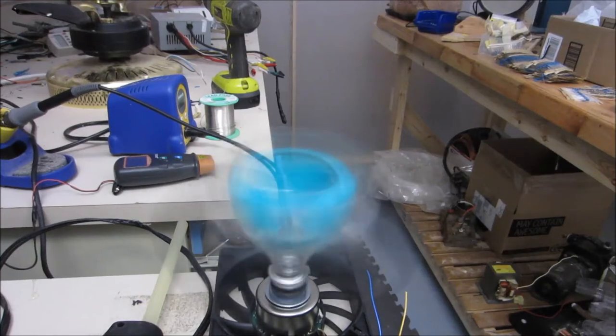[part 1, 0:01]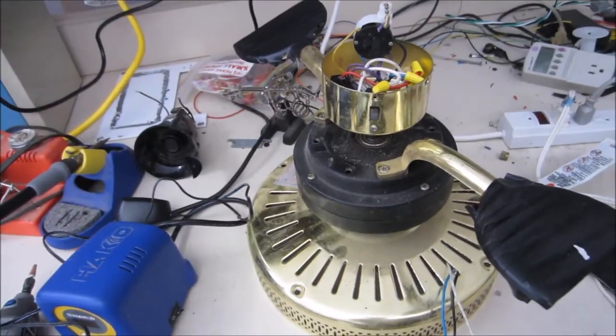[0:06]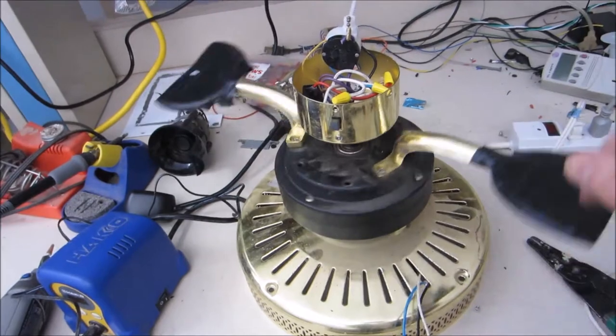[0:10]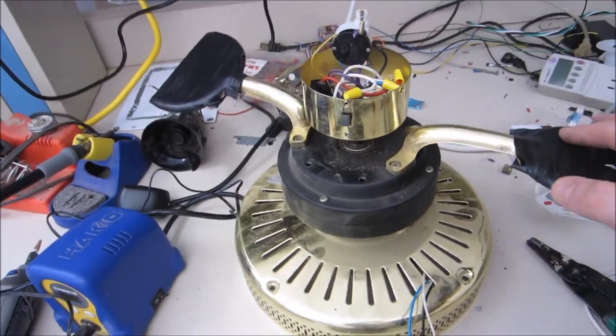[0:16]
I'm trying to make a centrifuge, and I'm looking through my junk piles to figure out what I have. This fan works. I have three ceiling fans, but they're only about 400, 450 RPM, something like that. Then I found this little guy.
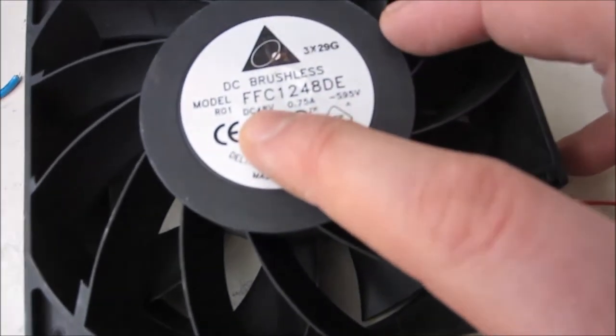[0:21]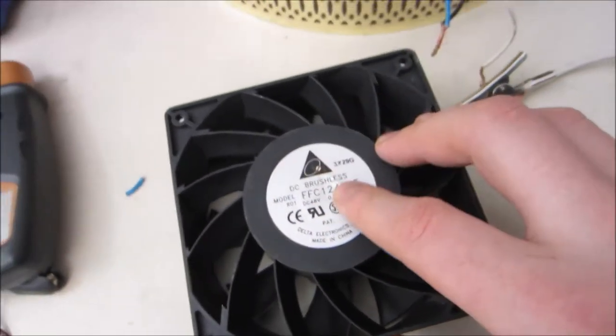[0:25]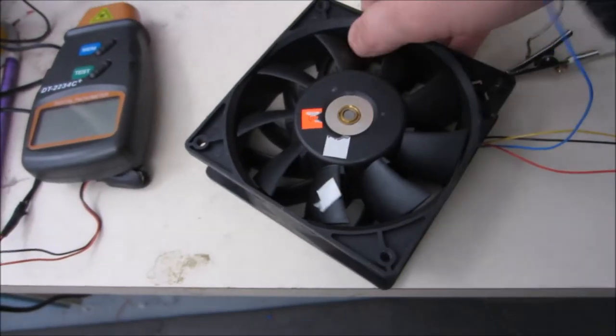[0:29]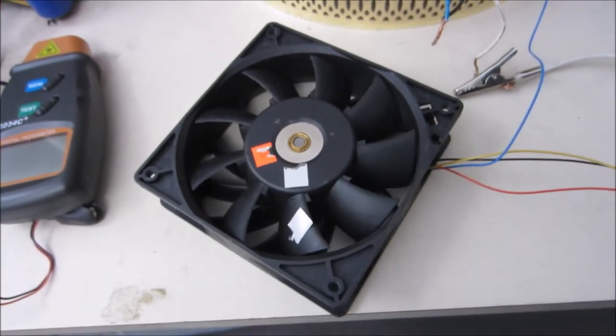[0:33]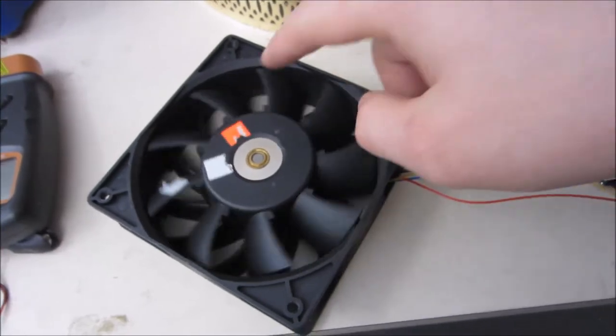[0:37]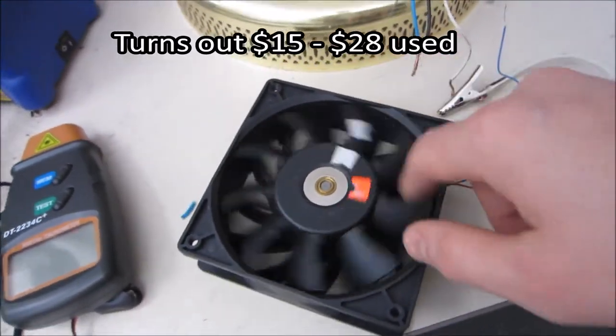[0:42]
Couldn't power it, and then I looked at the spec. It's DC 48 volts at 0.75 amps. That's pretty huge for a computer fan. I got it for $1. And that's not uncommon. A lot of thrift type stores will sell you things that are worth a huge amount of money because they don't know what it is. I haven't looked at what this retails for, but I know it's a heck of a lot more than $1.
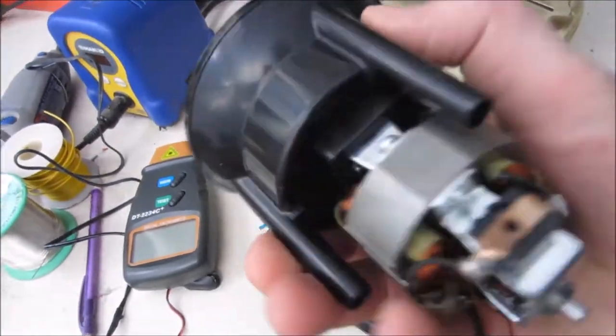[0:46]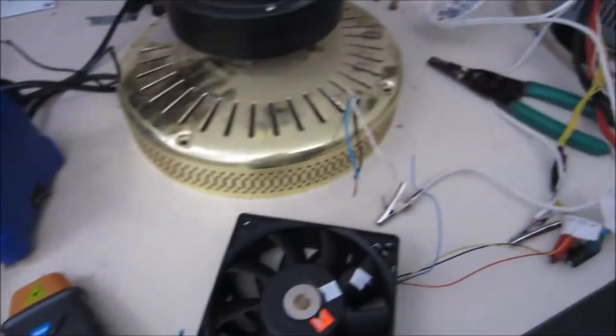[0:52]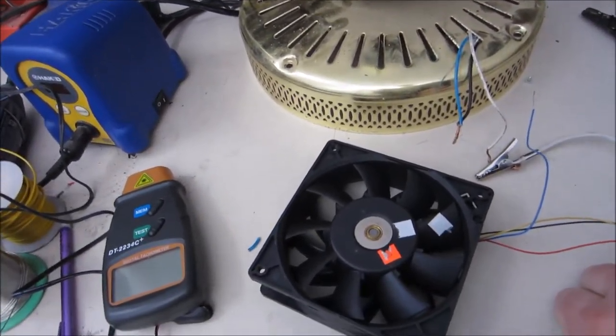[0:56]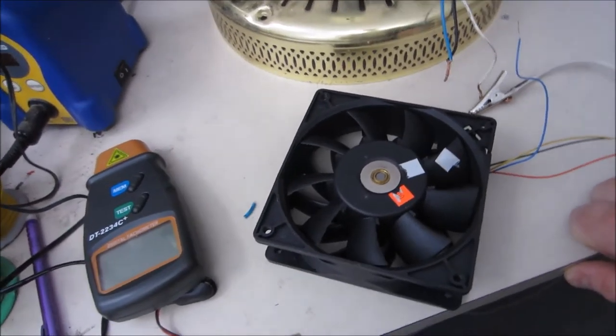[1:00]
Another option I found was this coffee grinder, but the coil seems to be shorted out, which is probably why I have this laying around to begin with. Some other options might be a vacuum cleaner, for example. I know a lot of people would use a drill, which is fine, but I don't have a drill laying around and I'm not going to buy one that will probably burn out from the duration.
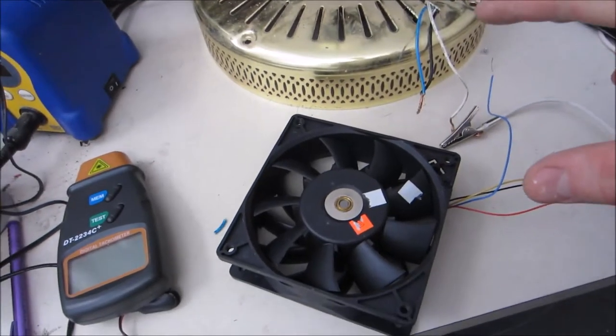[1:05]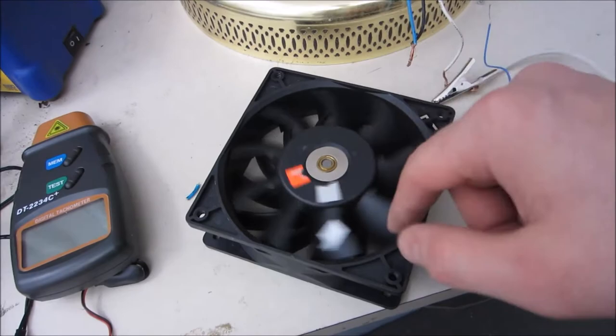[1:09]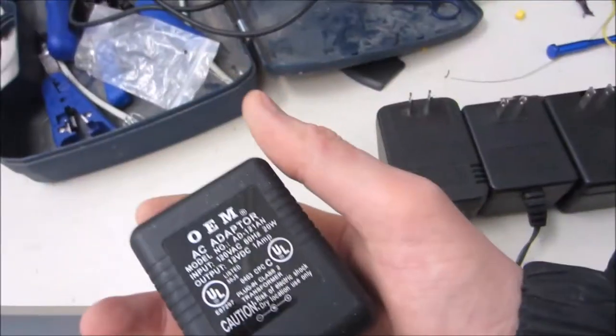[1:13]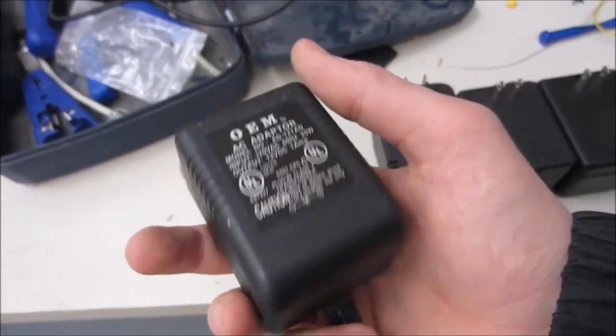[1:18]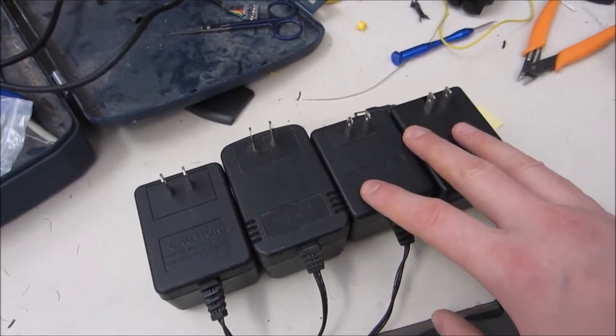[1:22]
Out of all of these options, I would say that this fan is probably one of the best because it's designed to run for a long period of time already. The only problem is getting that 48 volts. And I remembered I have a lot of these old linear supplies for 12 volts DC and they're all about 1 amp. So I grabbed a bunch of these, and the thing about linear supplies is they tend to
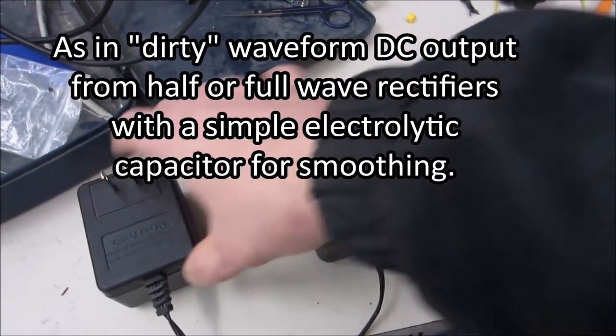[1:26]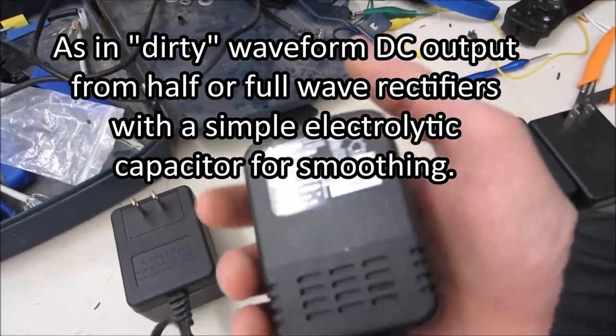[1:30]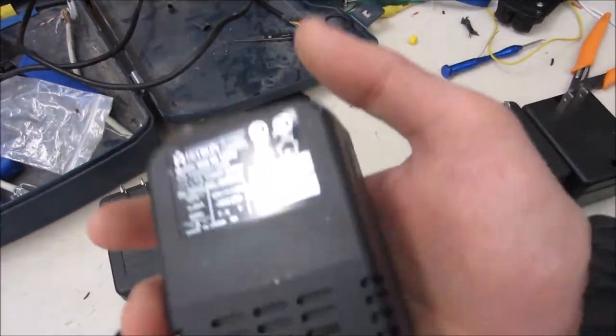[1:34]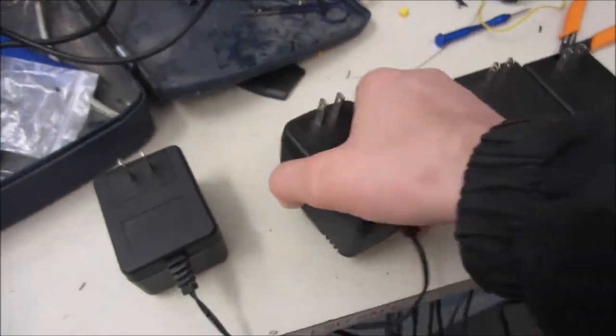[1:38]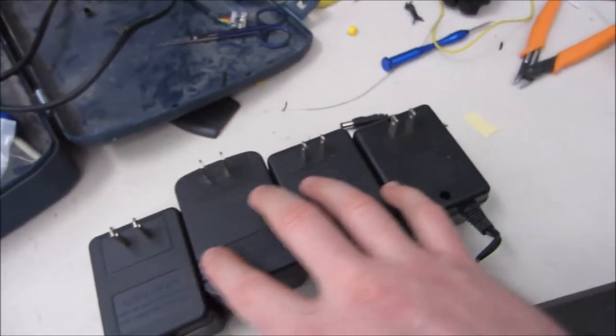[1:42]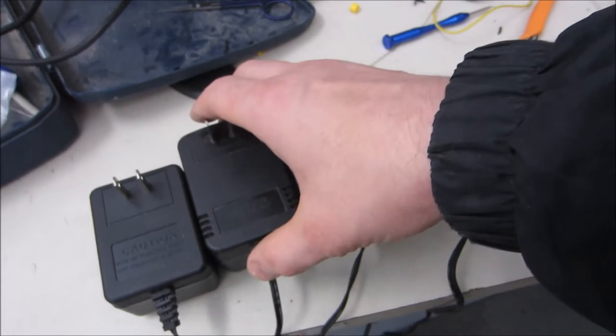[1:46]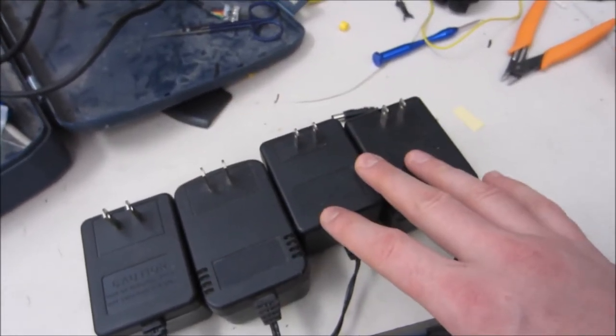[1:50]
be cheap and dirty. And the way you can tell a linear from a switching offhand, if you don't know the difference and you don't want to open it up, basically a linear is going to have a really large transformer. And this feels quite heavy. At 12 volts at 1 amp, this is a big heavy winding. So what I'll be doing is extracting transformers from all of these and probably using the exact same full or half-wave rectifiers they're using. Now, some of these test at around 16 volts.
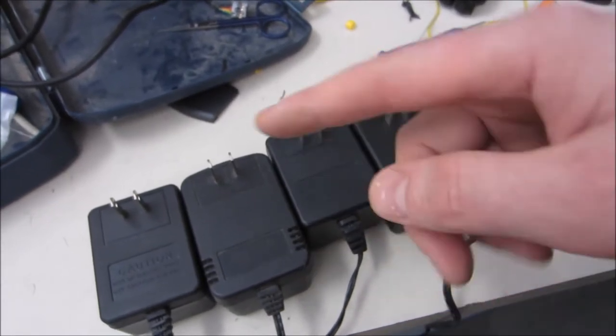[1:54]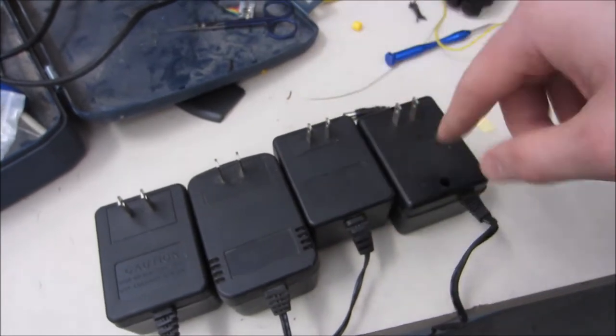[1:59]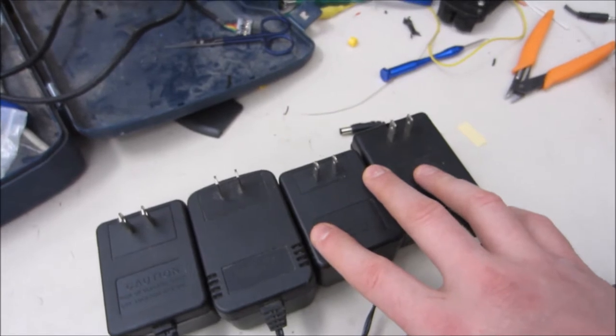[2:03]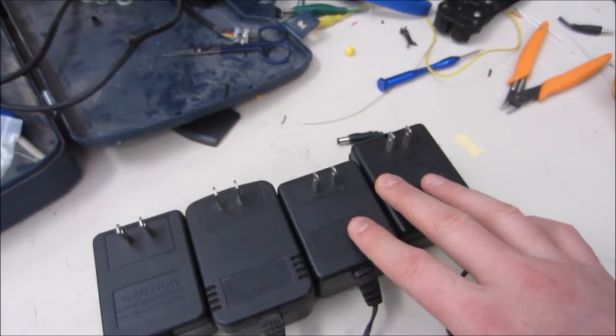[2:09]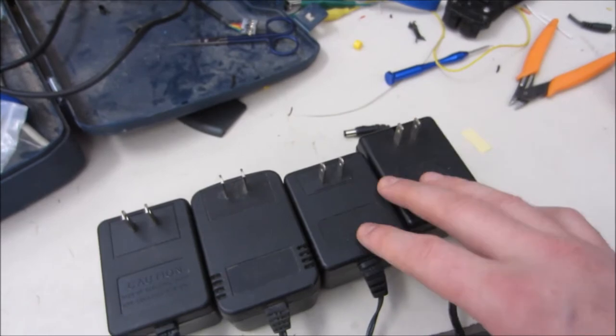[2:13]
And I know that that just means it's a dirty supply, basically. It's peaking at a certain amount and my meter isn't updating frequently enough to see the waveform. So obviously if you have some laptop supplies, those tend to be about 12 to 19 volts. And I could have stacked those together, but I wouldn't have landed quite at the right spot. If I had 12 volt supplies, then I could of course do the same thing.
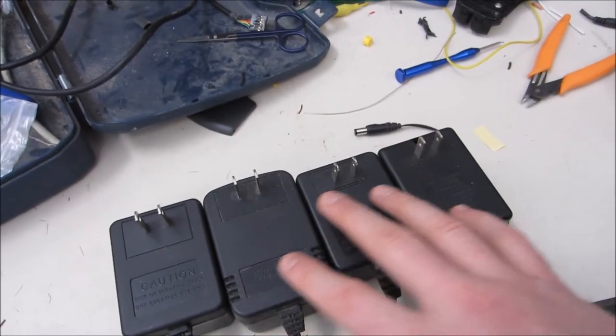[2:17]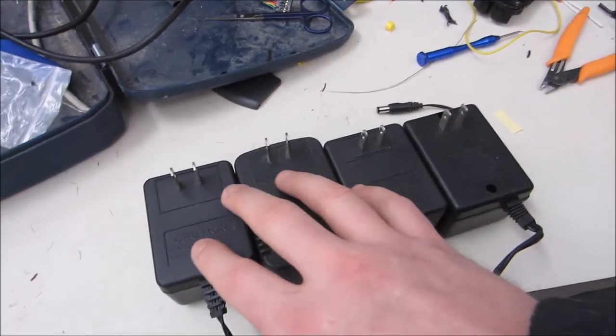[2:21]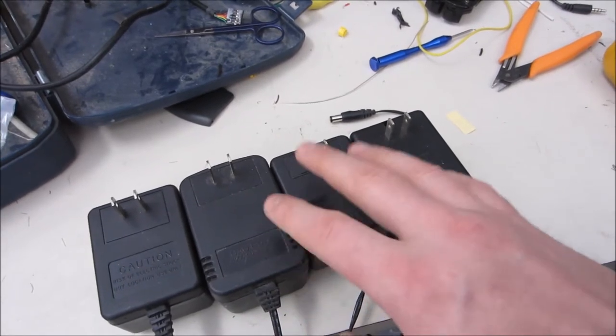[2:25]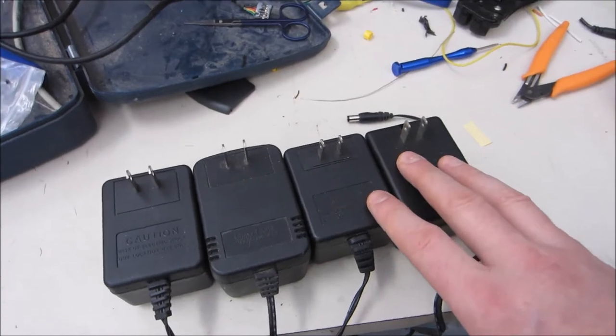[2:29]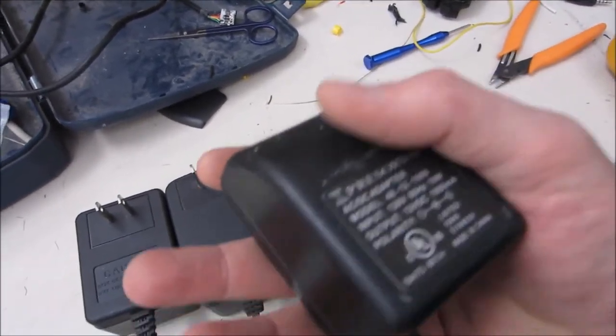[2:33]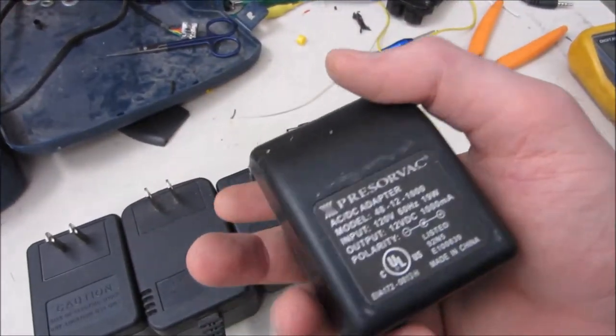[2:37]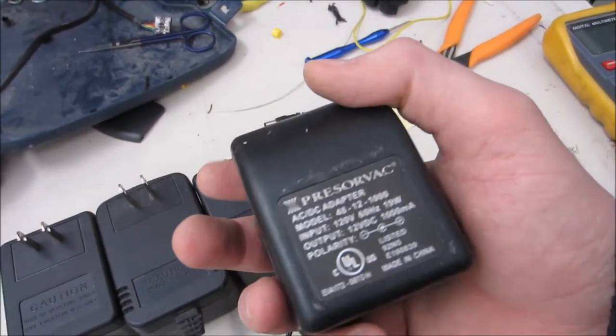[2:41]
There are plenty of 12 volt supplies for other things as well, and those do tend to be switching. And switching is totally fine as well, but there won't be that much wasted power because each of these is 1 amp and it runs on 48 volts at 0.75. I'm only wasting about a quarter of an amp on some of these. In theory, this will be pretty ideal and it will use up these old supplies that I never have a use for because when you plug one of these in, they're on and they are costing you that full amount of power the entire time they're plugged in. These are what people call vampires.
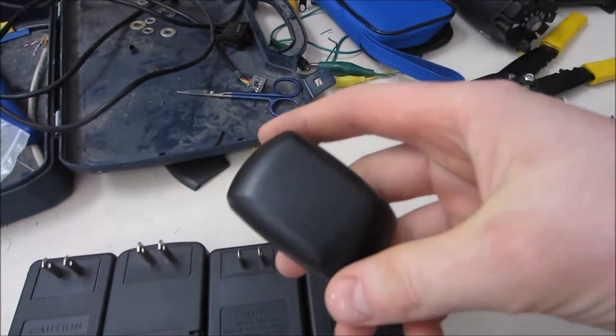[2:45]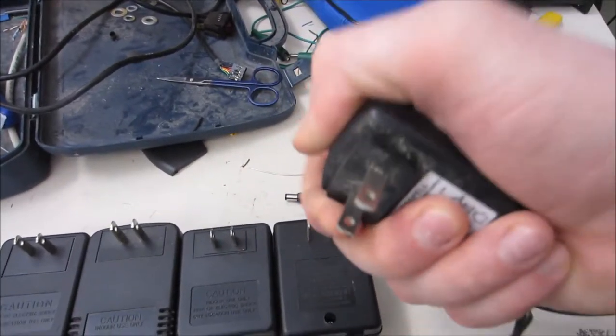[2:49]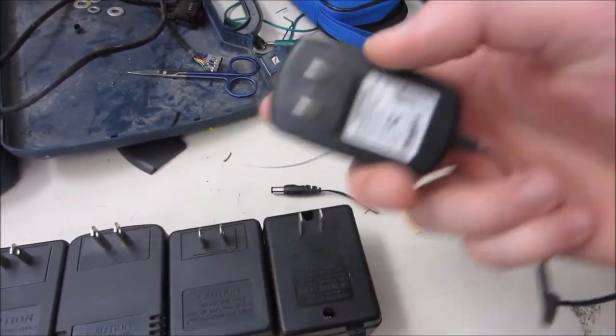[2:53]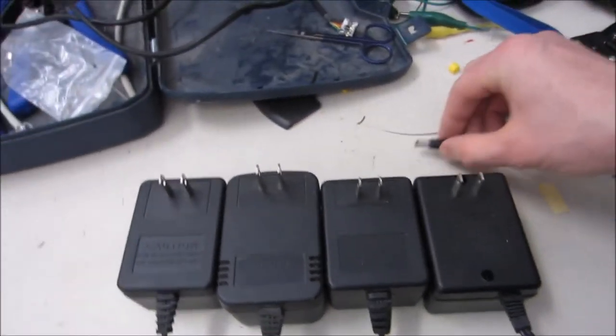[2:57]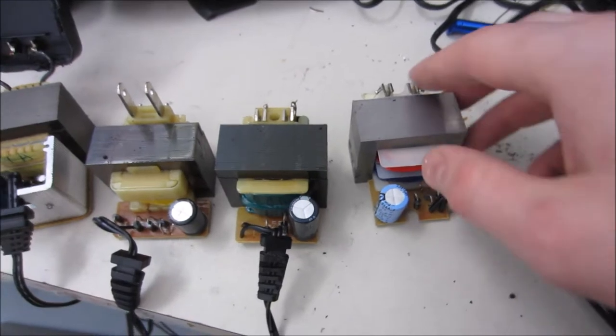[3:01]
This, for example, is a switching supply. And I can tell because it's just so light. And you can also see that it's a much smaller size. Switching supplies are far more efficient, and those will cost you a little bit when they're plugged in, but not nearly as much. It's interesting to see the different designs of these. None of these are identical.
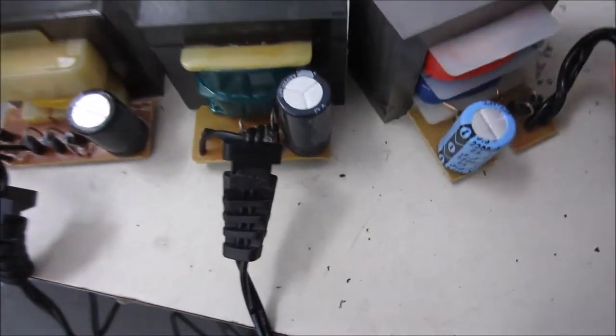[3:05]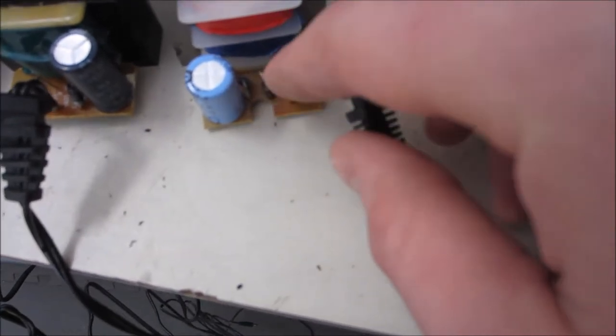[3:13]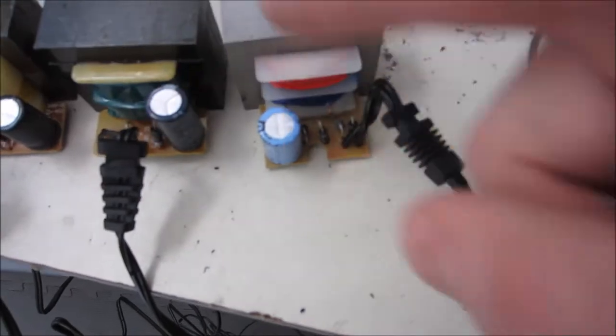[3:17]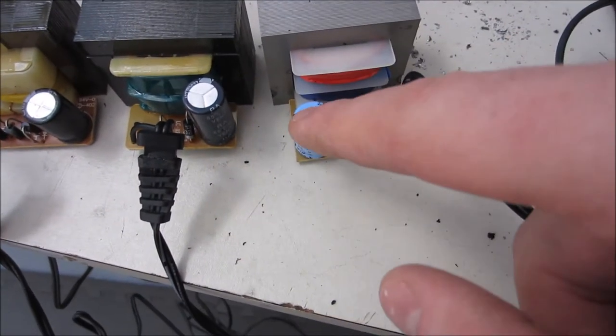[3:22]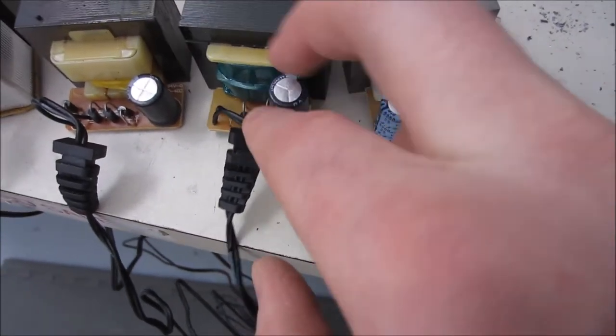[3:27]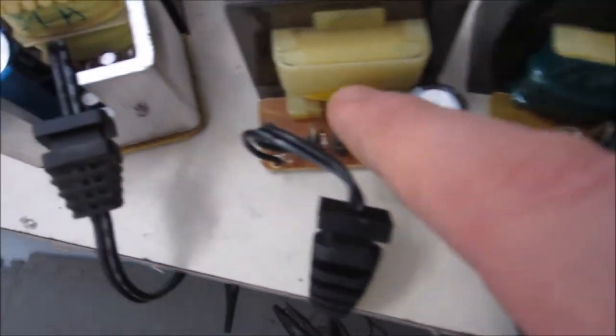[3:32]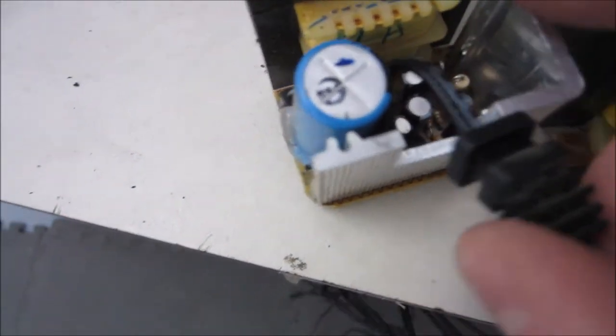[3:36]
They're all very similar. Right here we have four rectifier diodes and an electrolytic capacitor. So what happens is you break up the waveform, and that leaves just peaks as it alternates. With these rectifier diodes, it breaks it down to just peaks, and then this electrolytic capacitor smooths out those peaks. And you can see it's the same fundamental design with all of these. This is full wave, this is full wave, this is half wave. And right here, this one's by far the most sophisticated.
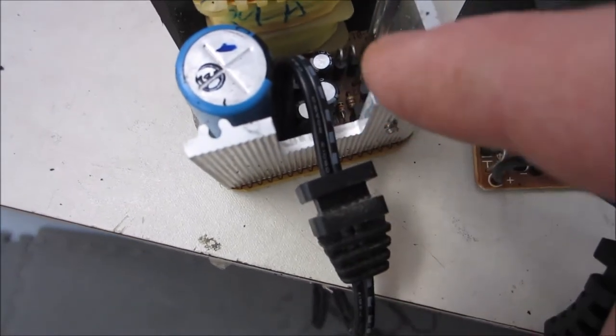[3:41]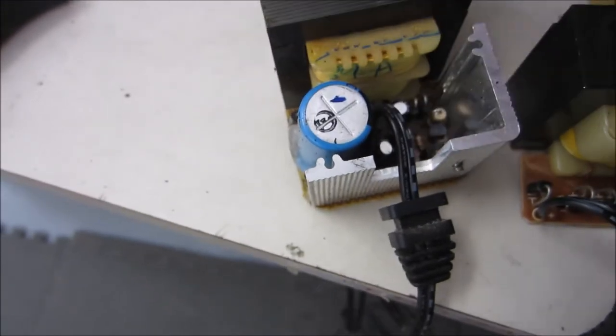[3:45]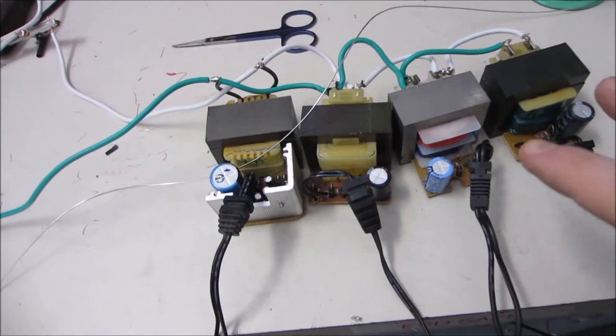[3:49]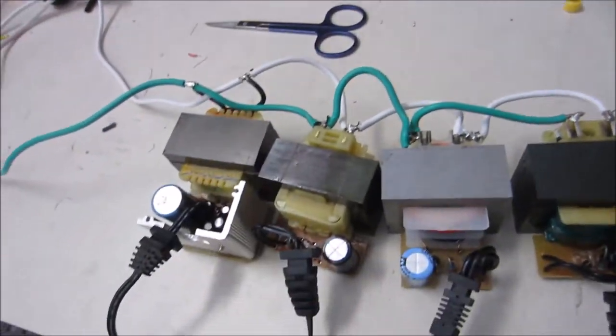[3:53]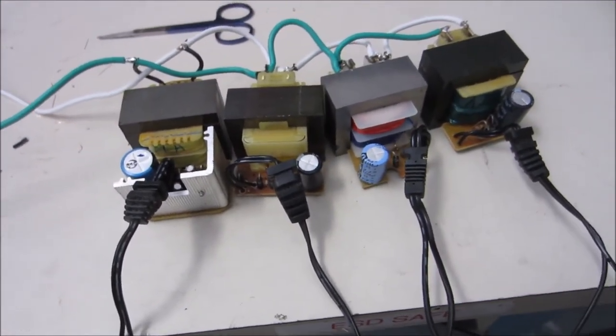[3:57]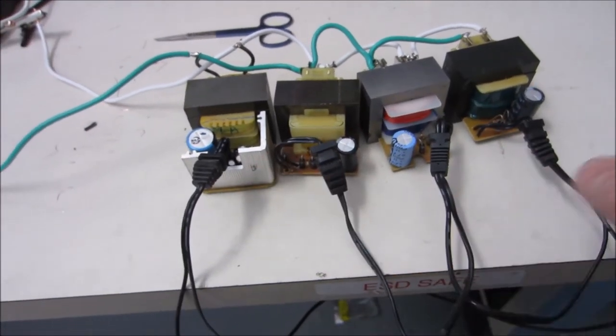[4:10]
It looks like this is actually regulating pretty substantially. And if I recall correctly, this was probably the only one that read a true 12 volts. When this is on, I'm actually getting 60 volts output, but I don't believe that's the effective voltage. And by that, I mean basically it's those peaks. Those peaks are lining up and making it appear like 60, but I think once it starts drawing current, it's actually going to be drawing closer to the equivalent of what it's actually supposed to be outputting, which is 48.
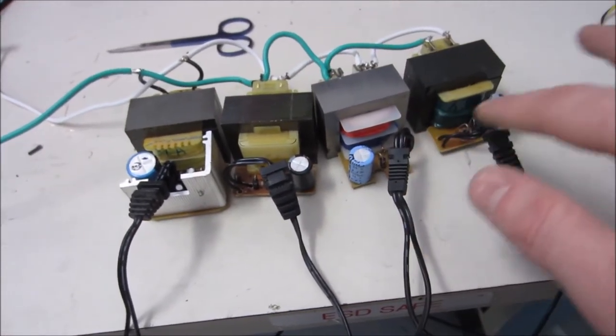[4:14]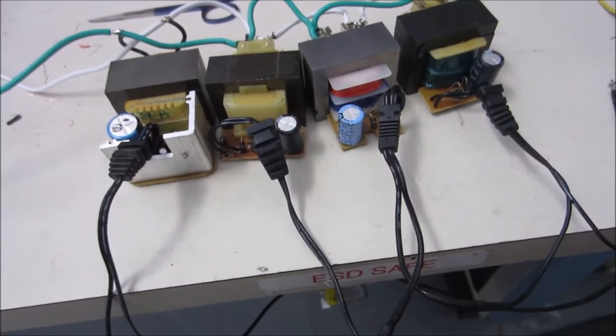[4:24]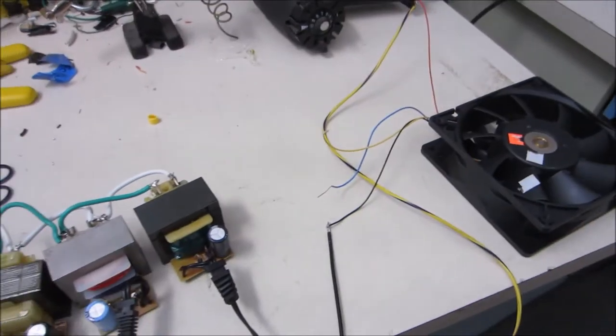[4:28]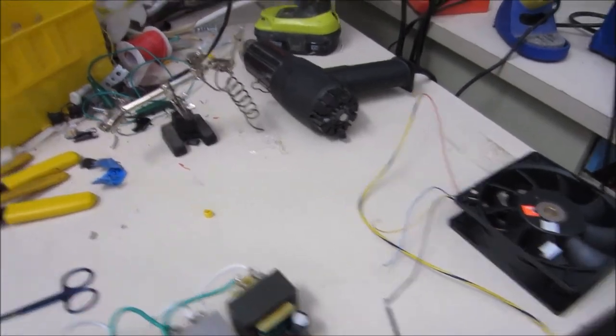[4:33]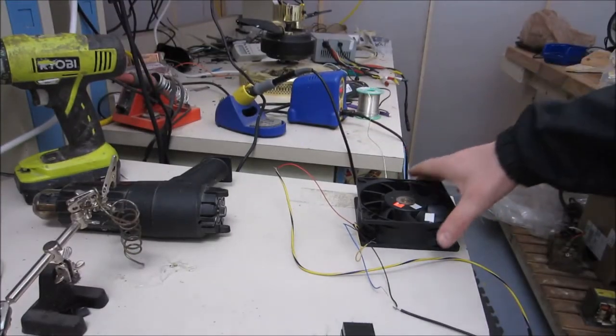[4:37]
Again, this has nothing to do with my configuration. This is just that these are some really cheap rectifier configurations and cheap smoothing electrolytic capacitors. So if I was to go through a secondary set of full wave rectification and a nice heavy duty set of electrolytic capacitors, I could probably get it to actually say it's outputting 48 volts. The main reason I'm taking this video is because I can't believe how much this is outputting in terms of the airflow. It's pretty crazy. It could literally push itself off the table if it wanted to.
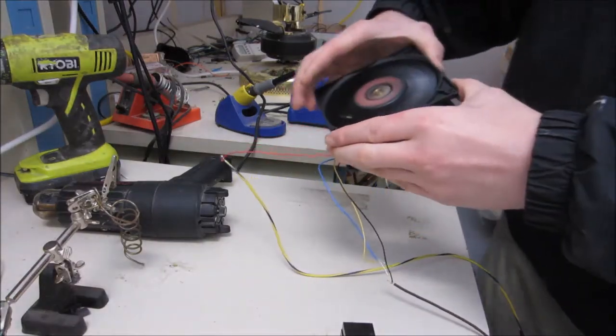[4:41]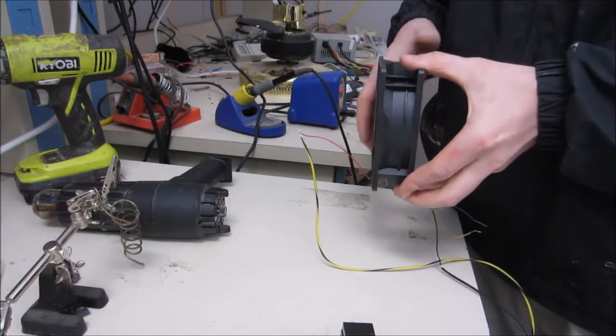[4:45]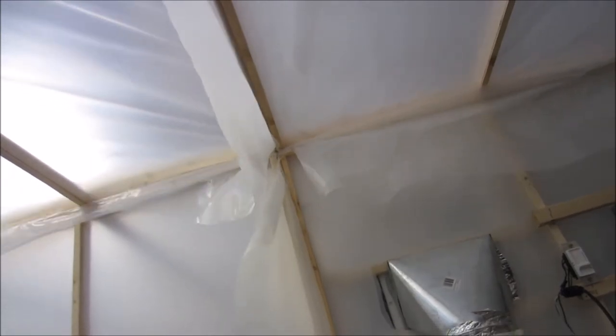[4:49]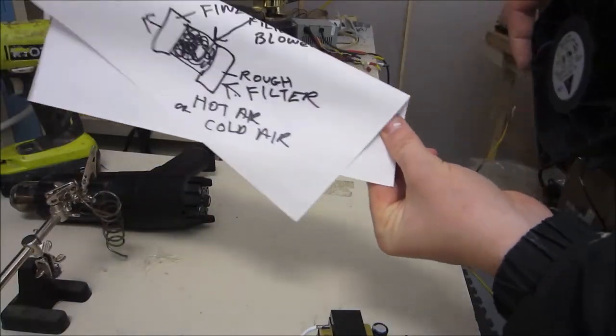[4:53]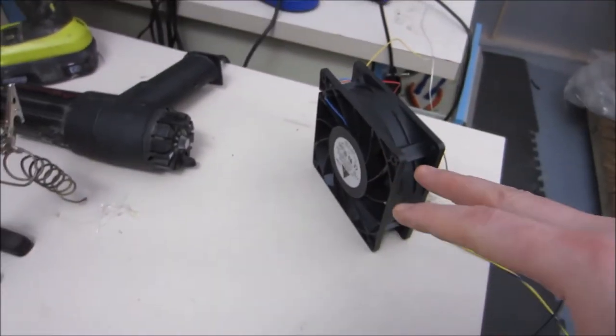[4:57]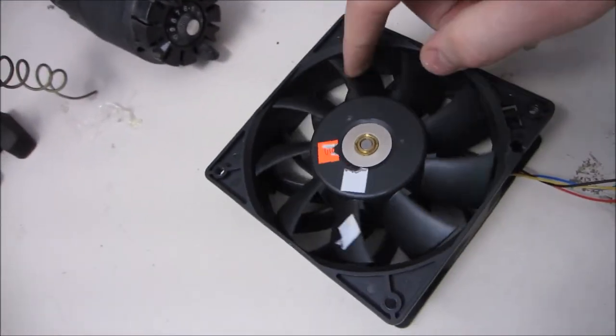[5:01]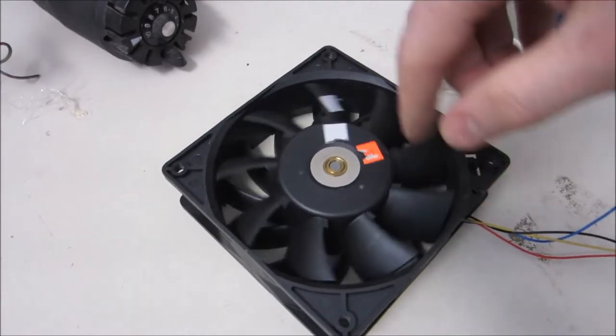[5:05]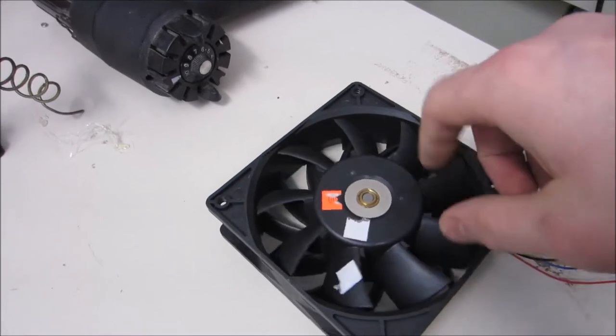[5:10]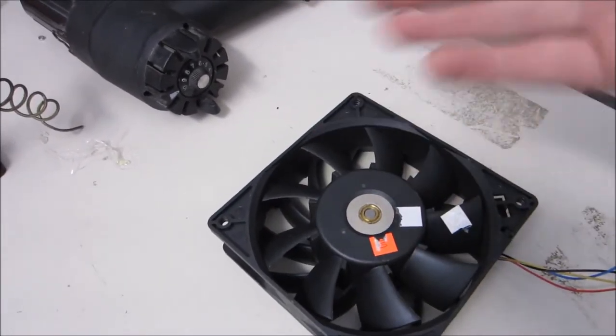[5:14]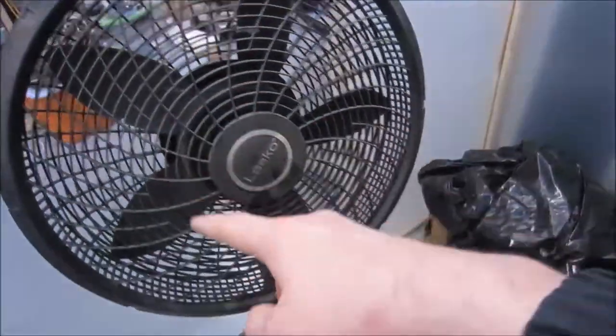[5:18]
So what's especially interesting about this is look at the number of these fins there are. Now, you may have noticed with the paper and the baggie that I was holding up, it just seems to sort of sit in the air. And it's because it's such a high density of these fins that it's not having that pulsing you get from typical fans. Like, for example, look at the number of fins on this fan.
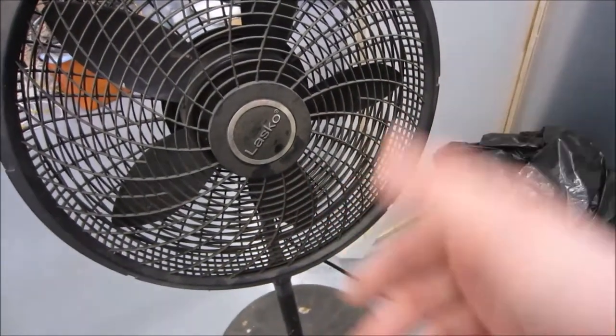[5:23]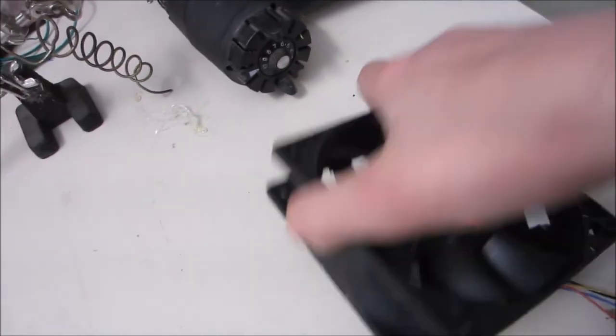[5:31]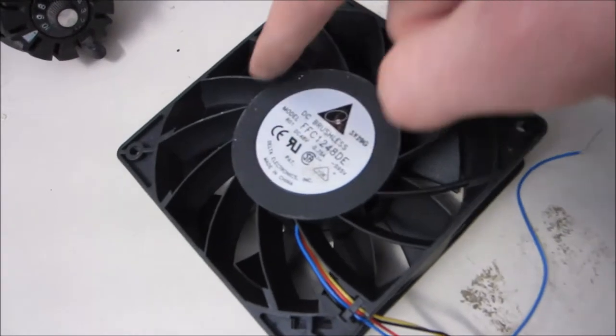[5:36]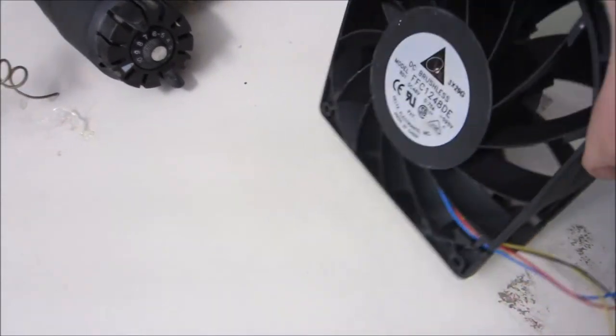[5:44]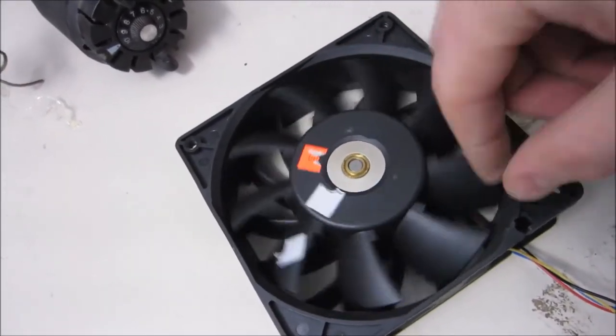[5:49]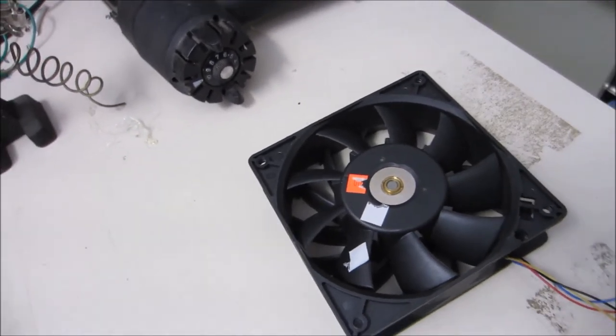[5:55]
This fan, everything kind of flops around because it's getting hit with those bits of air that are being pushed in sort of packets. But this is so much tighter, and I suspect partially also because of these. Yeah, you can see they're actually contrary. So what's happening is the air is actually being straightened out. And although it's still in packets, it's being broken up by the high density of fins and obstacles that are redirecting the airflow. So it's pushing just this static beam of output. It's really interesting. I've never seen anything like it, but I don't generally deal with high-end fans like this.
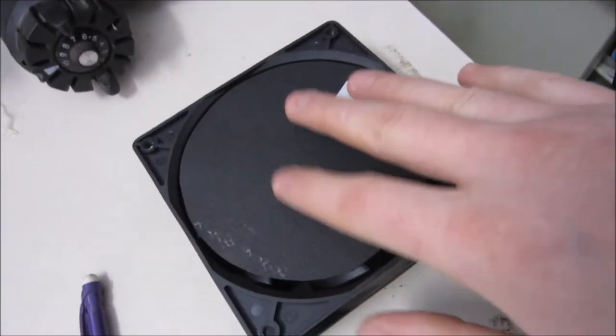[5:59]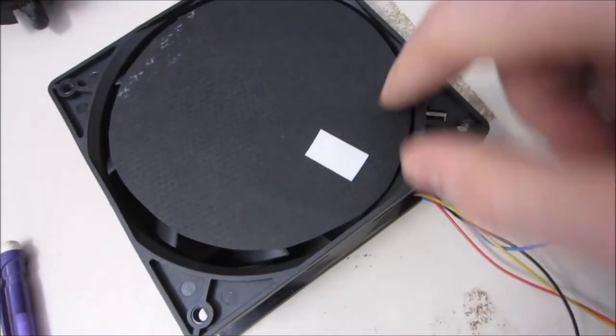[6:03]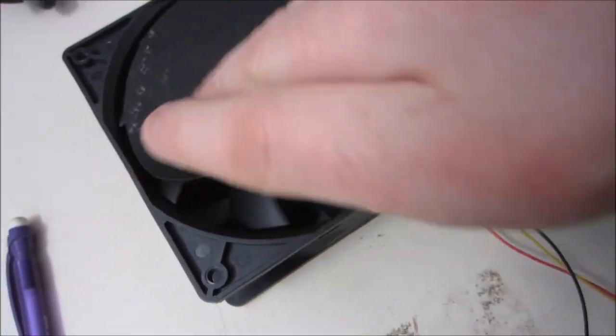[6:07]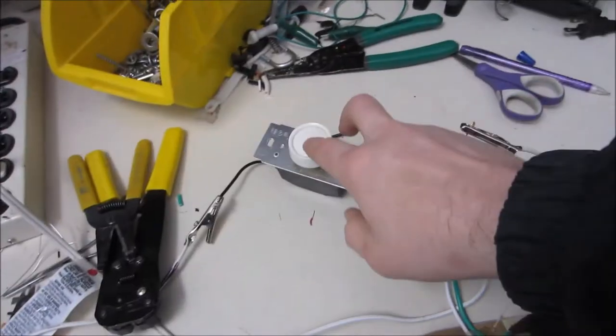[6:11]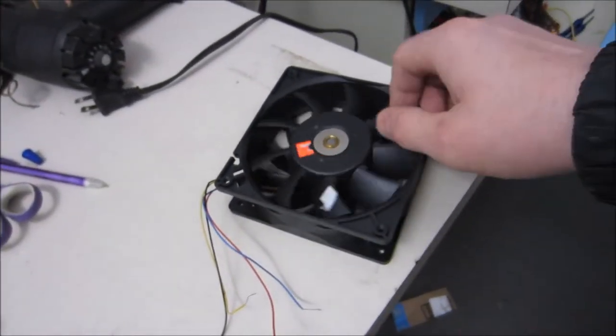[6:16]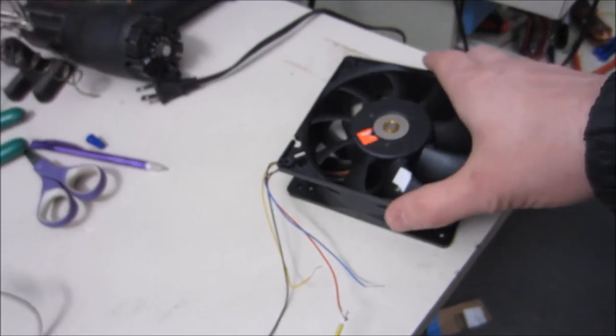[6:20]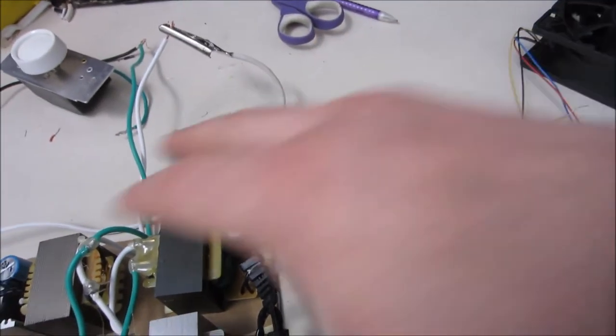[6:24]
Well, I was able to put a piece of black construction paper on here and a reflector, and that measures at about 5,000 RPM. And that's with the resistance of these blades. Impressively, a dimmer switch actually works with this. I wasn't sure because this is brushless, but it's also DC. So I suppose it makes sense in that regard. So what must be happening is it is actually effectively lowering the overall voltage output.
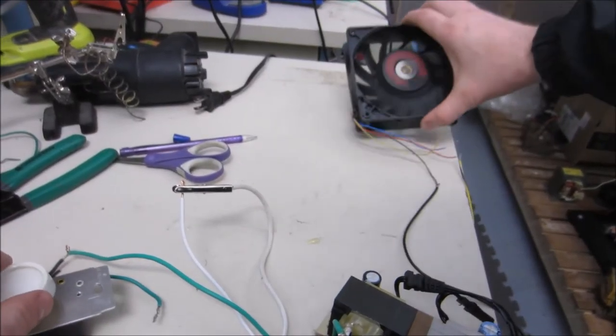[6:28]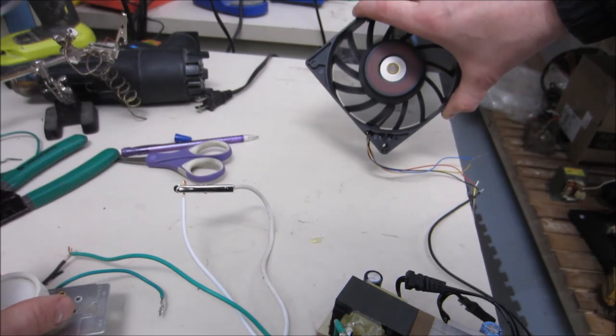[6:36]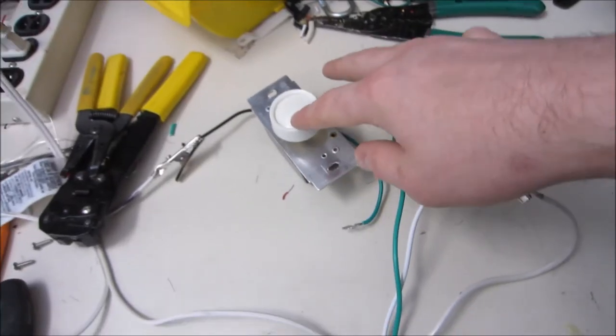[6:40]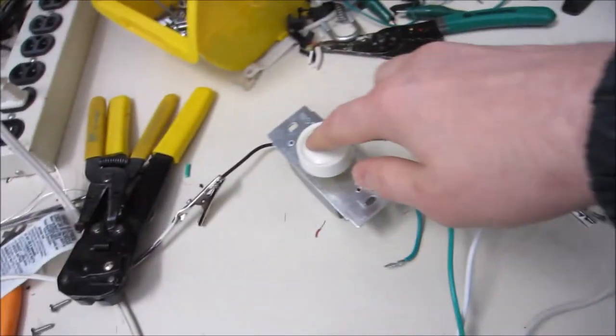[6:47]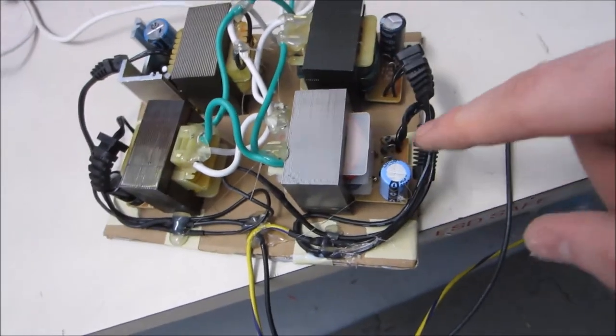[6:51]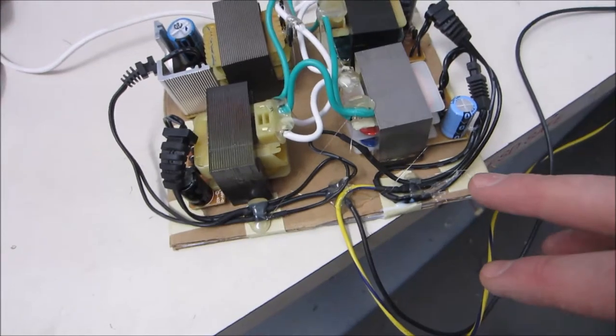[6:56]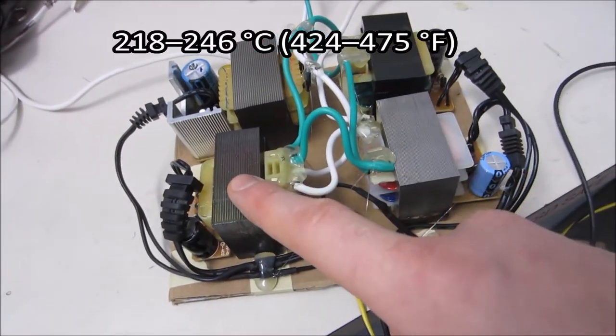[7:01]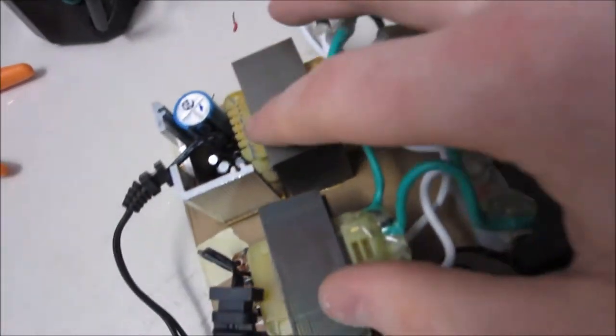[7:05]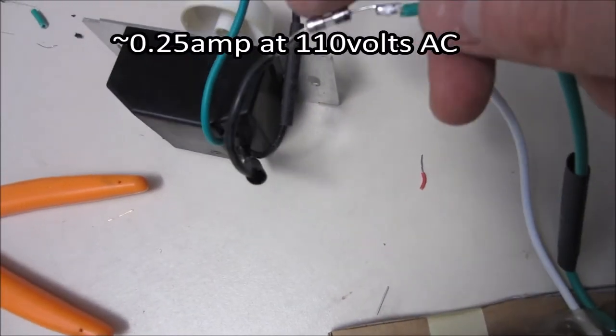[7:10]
These are normally fairly expensive, but this was 50 cents. Again, you know, from a thrift shop. This really nice fan was $1, this was 50 cents. These were free because they're just crap I had laying around. I mounted this on cardboard because the auto ignition temperature of something like paper or cardboard is actually fairly high. I would bet that the resin would break down and short these coils before it would auto ignite the cardboard. Each of these linear supplies will draw about 1/4 amp. So together they should draw 2, and so I put a 3-amp fuse on here for safety.
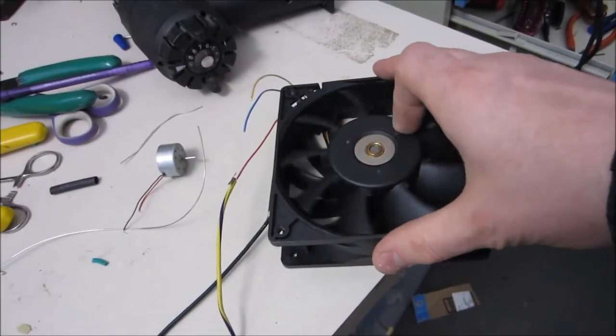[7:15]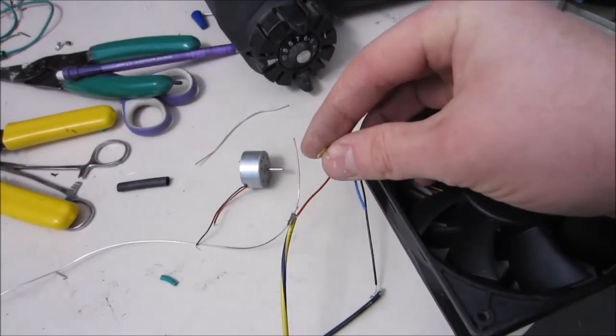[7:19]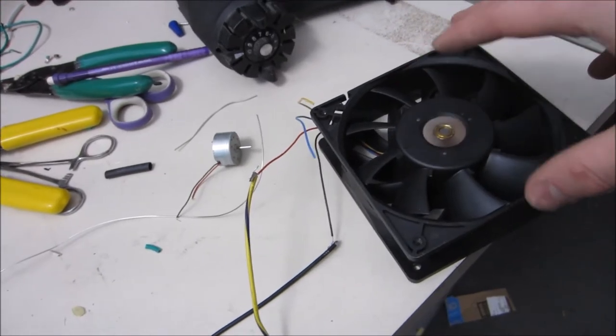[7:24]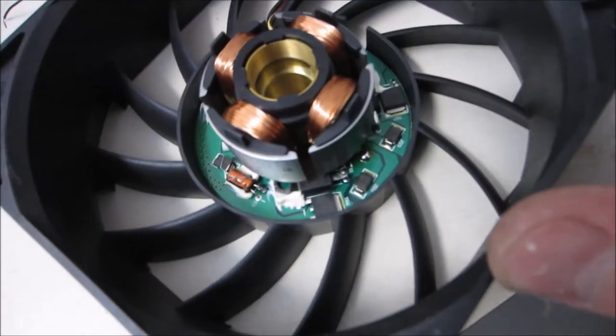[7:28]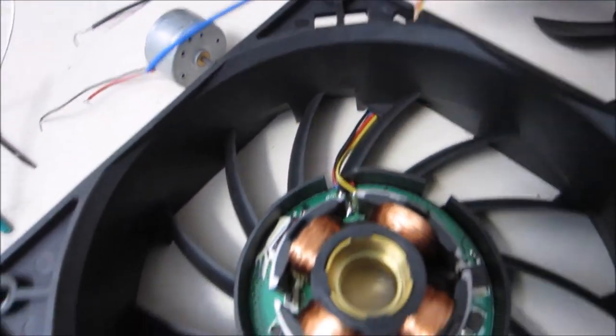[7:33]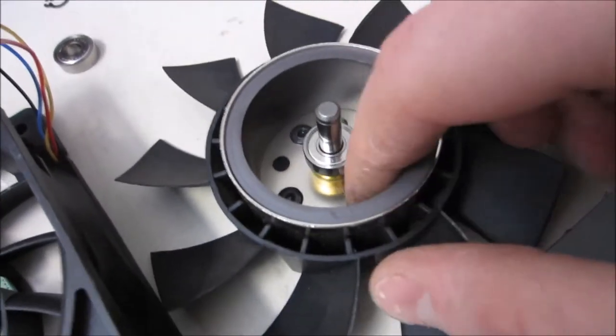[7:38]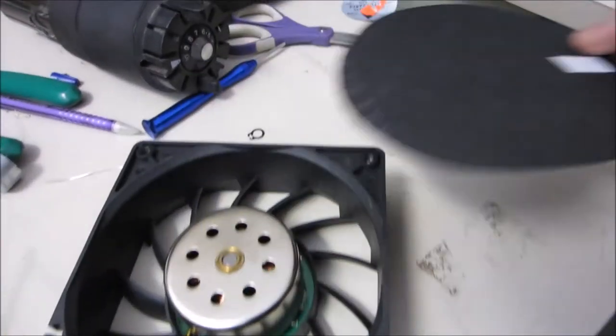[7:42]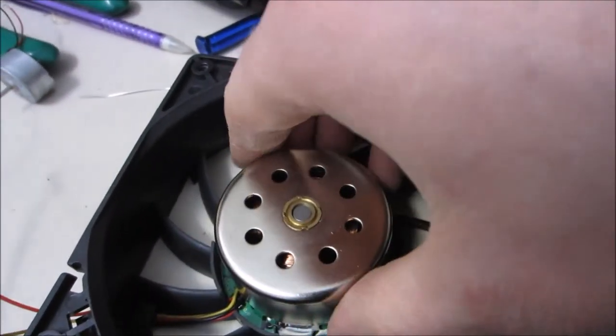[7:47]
Well, annoyingly, I seem to have fried my other one of these. I also did something stupid. I also tied it into one of these sensor wires, and I don't know, I may have fried some kind of brain in here. Yeah, clearly there are some pretty sophisticated electronics in here, so I guess I shouldn't be too surprised that I managed to burn out the last one by hooking it to a sensor wire. I think I can get these propellers off. I'll just have to remove these rivets with a drill. So I just did a quick RPM test, and it's just under 7,300 RPM now that the blades are off.
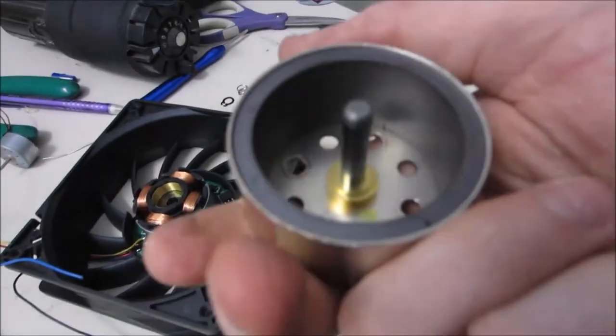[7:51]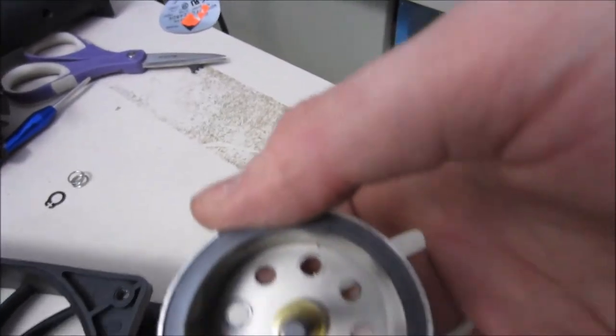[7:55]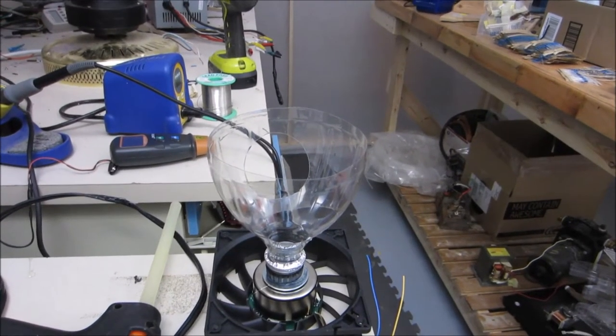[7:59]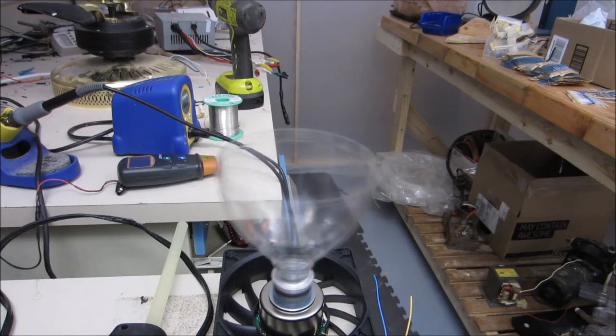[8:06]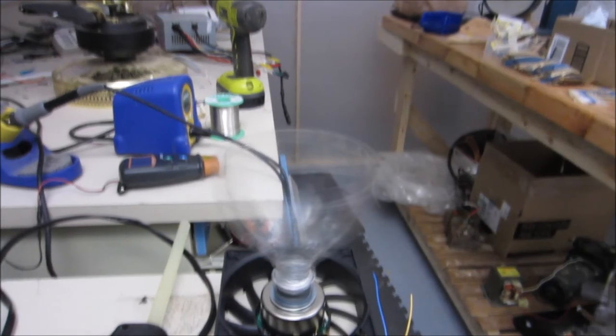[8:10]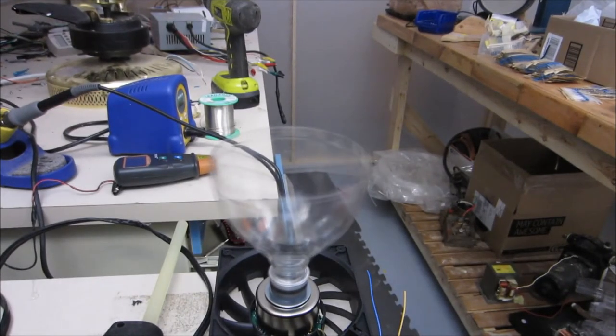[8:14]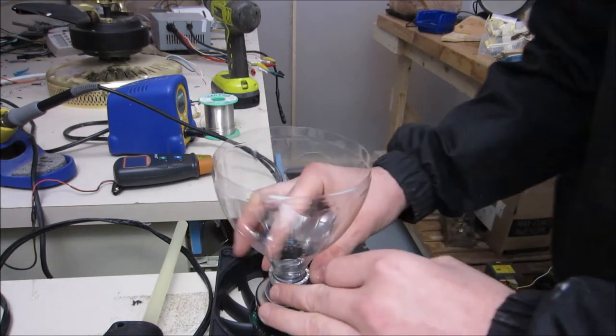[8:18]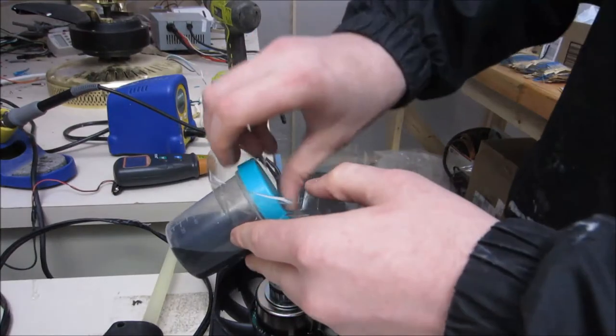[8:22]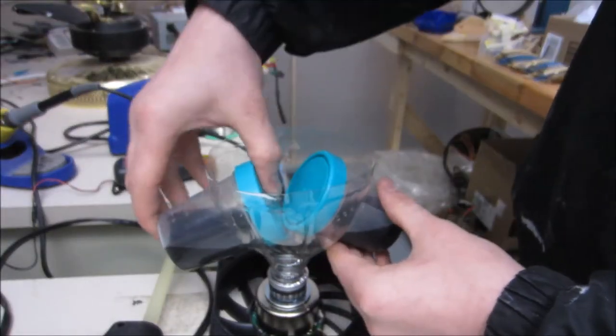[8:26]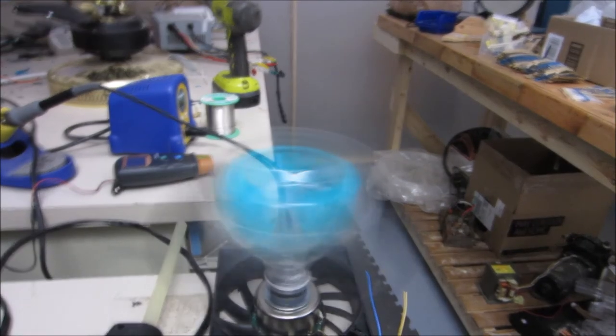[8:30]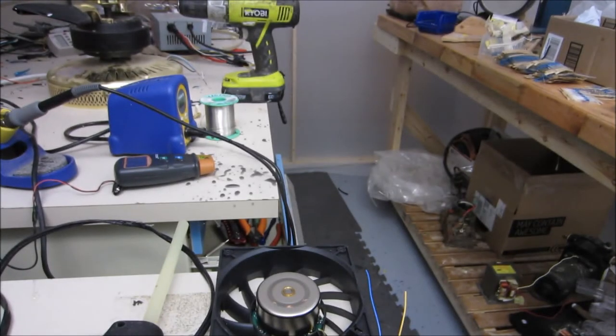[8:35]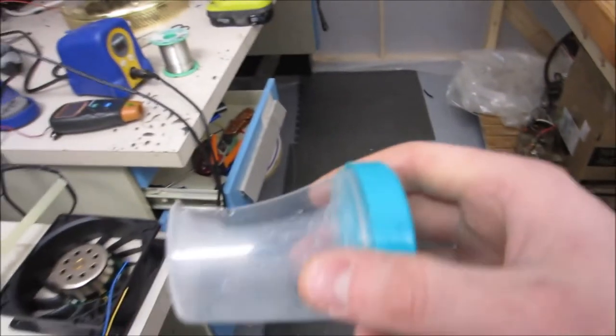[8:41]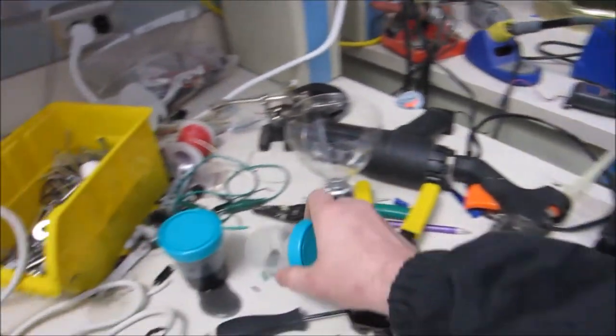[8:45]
This is what this piece looks like. So this looks like it should be pretty easy to mount in theory, because I can just put some screws through it. So you don't have to tell me this is idiotic, but I just wanted to see, as a proof of concept, if this would even work at all. So this is empty. A little bit of misalignment goes a long way with this sort of thing. Let's add a little bit of load. Yeah, that just kind of flew off and exploded.
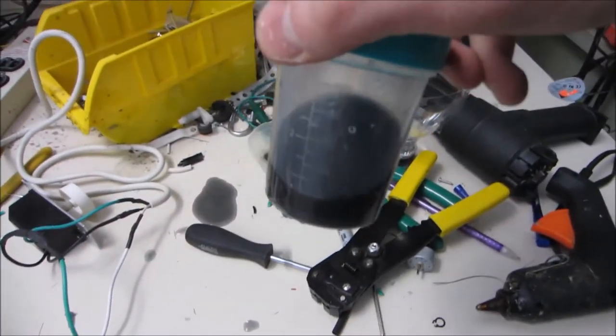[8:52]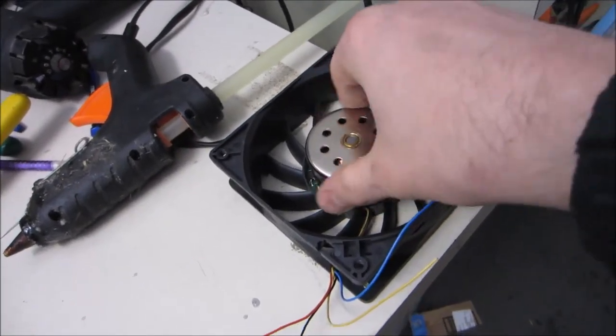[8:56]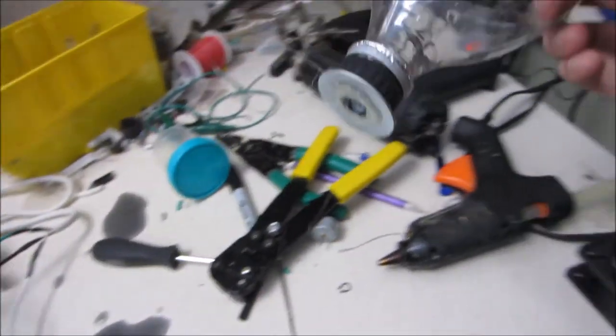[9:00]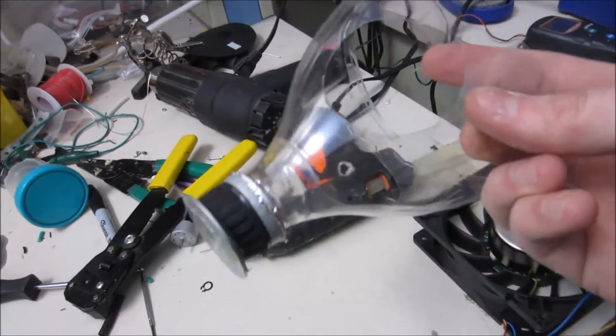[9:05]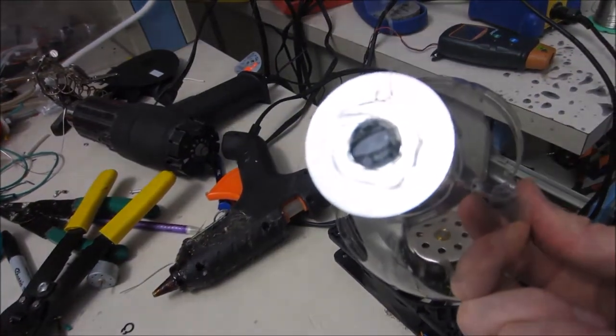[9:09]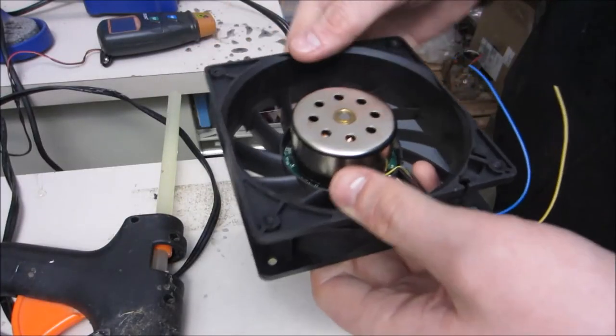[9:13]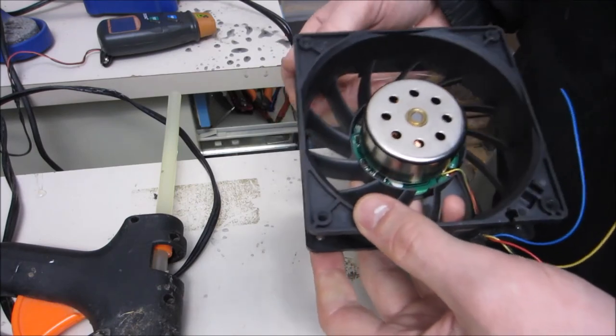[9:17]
Okay, well, on the bright side, nothing really important was damaged. Just lost a couple sample cups and this thing actually even broke. That hot glue let go pretty dramatically quickly. I don't especially want to remove this housing. I don't want to destroy this housing, but at the same time, it's going to limit my options.
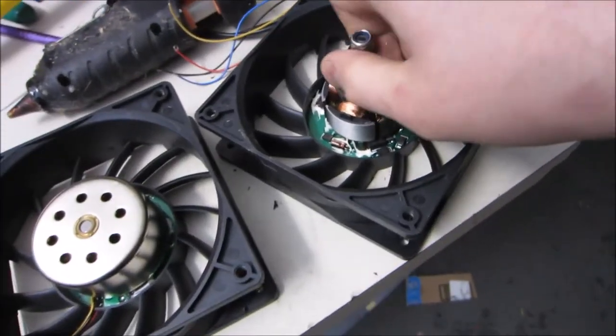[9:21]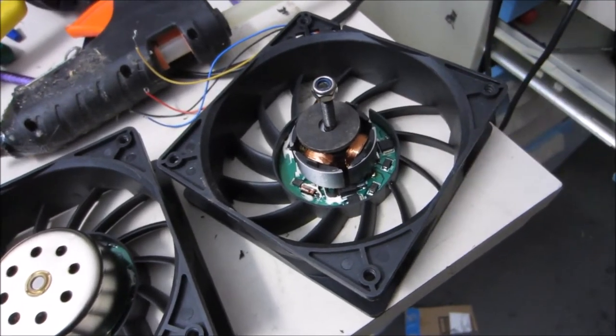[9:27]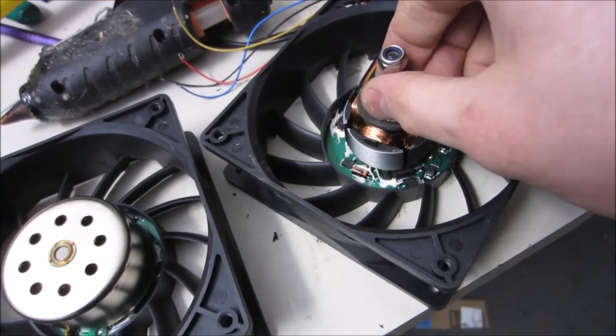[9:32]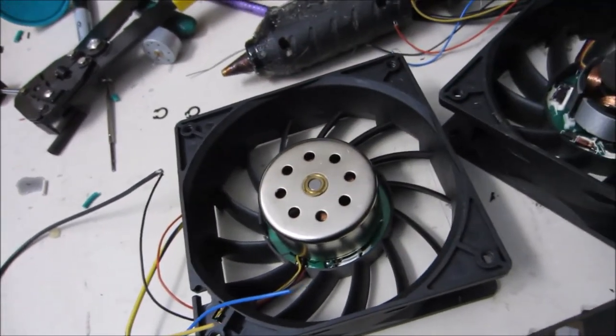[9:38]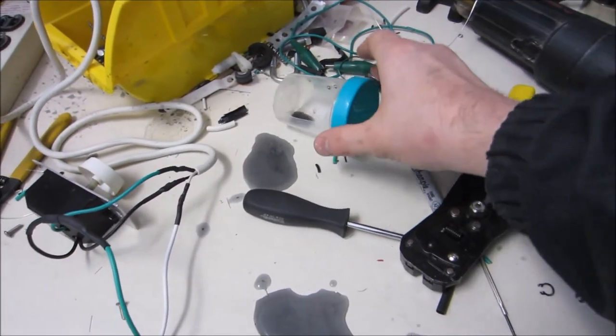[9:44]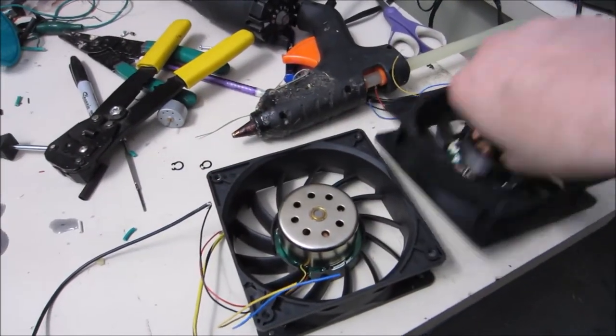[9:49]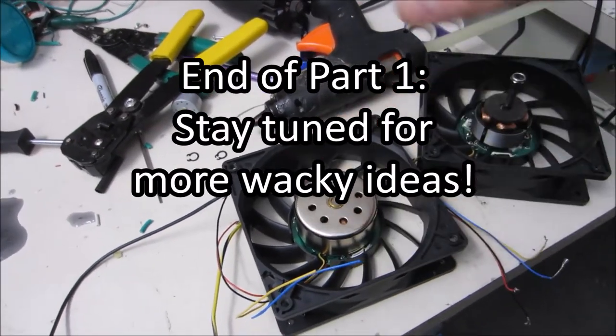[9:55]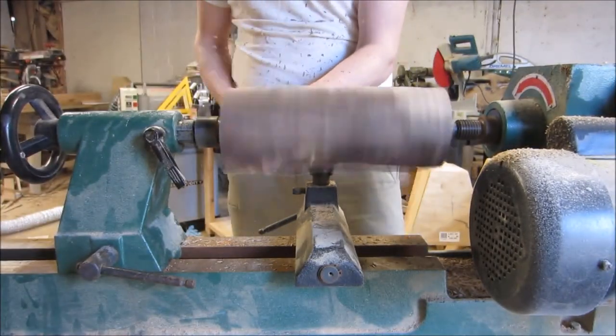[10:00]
I haven't completely figured it out, but I figured since I already destroyed this particular one in terms of the electronics, yes, it may be salvageable, but it already has a nice bearing assembly and housing, so I can probably use it as an opposing axle to help focus any kind of movement that may happen. I also am a little bit on the fence about these sample cups. I just happen to have a lot of these. These are actually urine sample cups. So I'm thinking I have a bowl right here, and then I have an opposing housing above, which just helps hold it down, and then I can just load anything into it.
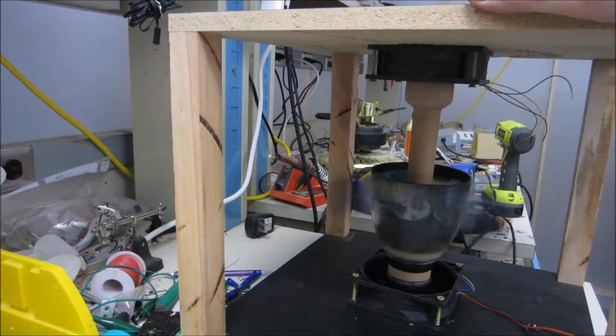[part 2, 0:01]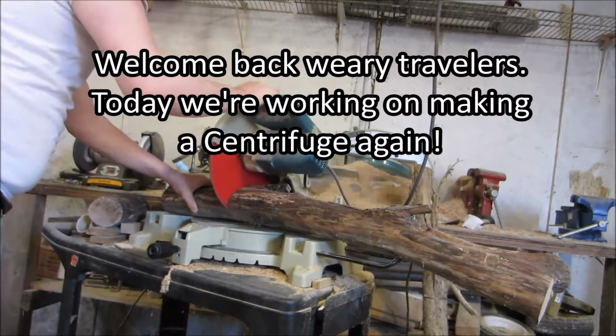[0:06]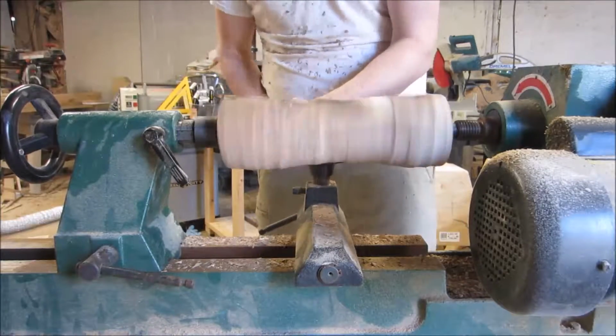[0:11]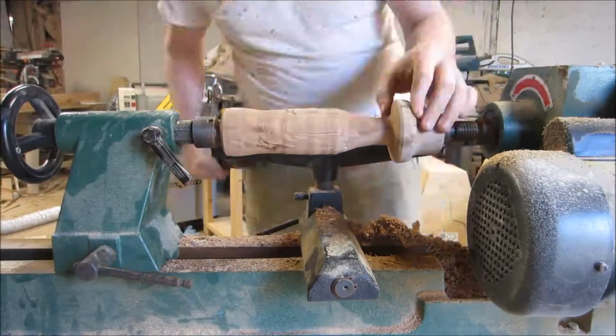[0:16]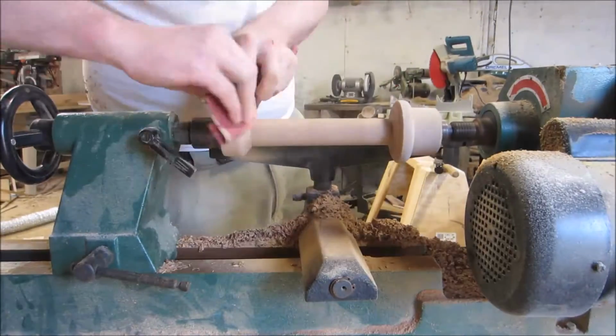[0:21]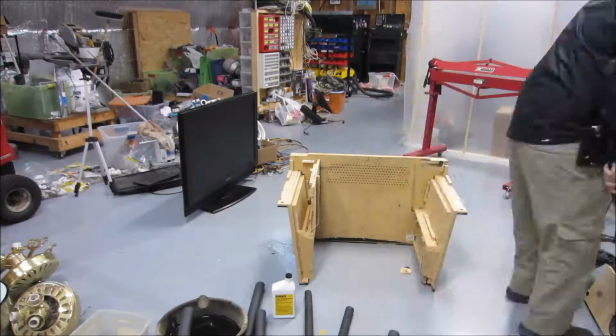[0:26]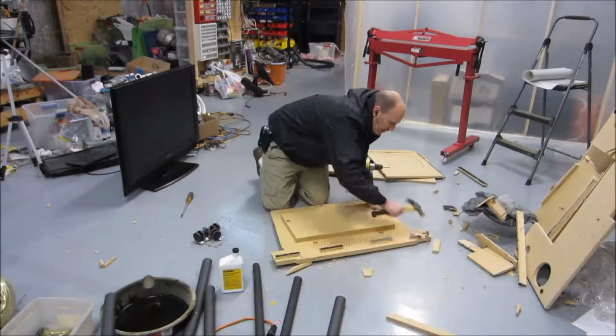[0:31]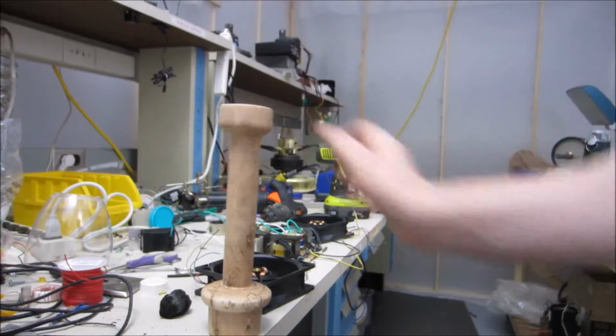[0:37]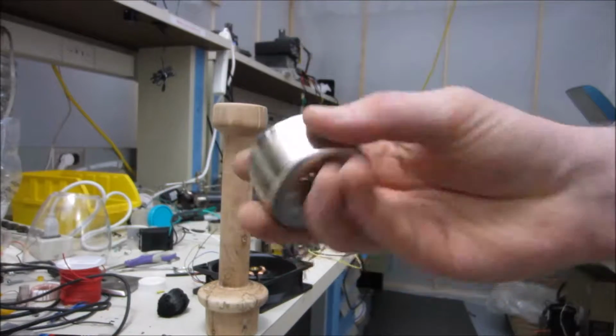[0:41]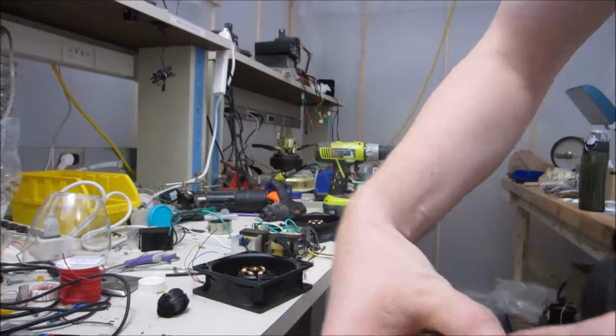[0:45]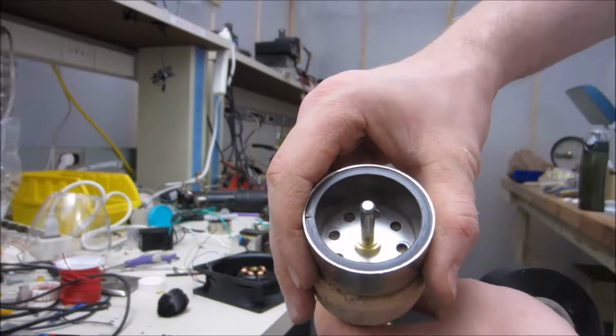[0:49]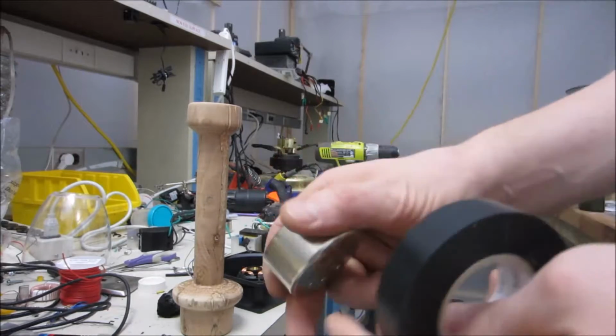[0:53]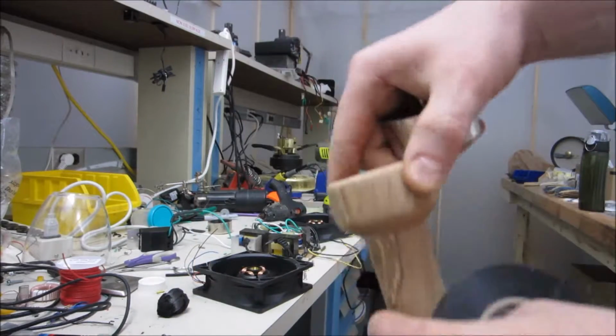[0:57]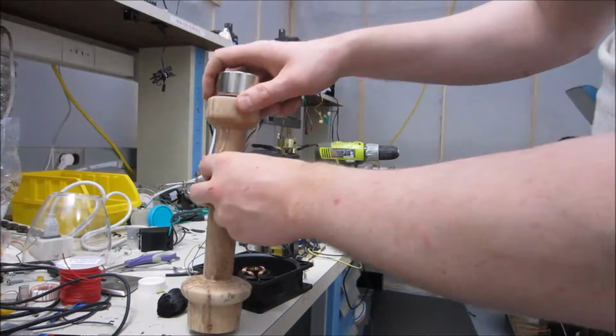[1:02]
Shit. This has to be really, really centered, and I don't have the tools to do that by a long shot. I could try to eyeball this, but I doubt that's going to be adequate. So, I was thinking my best bet is to wrap it with electrical tape until I have the same diameter as this, and then I'll be much more confident in whether it's centered or not.
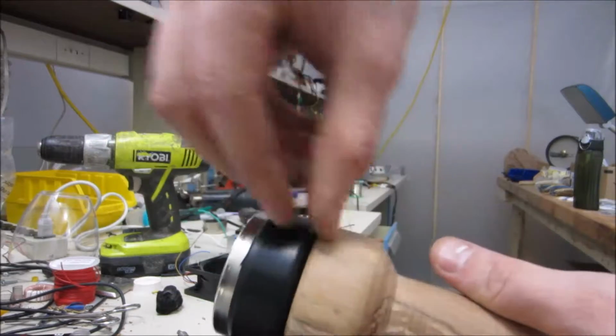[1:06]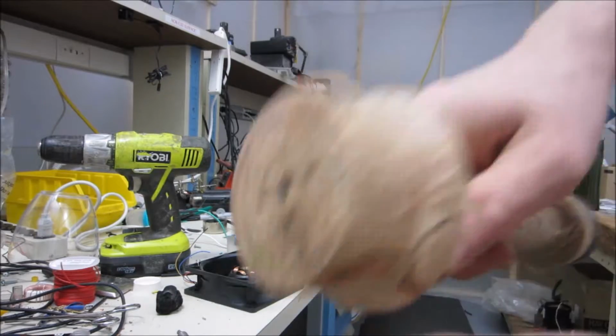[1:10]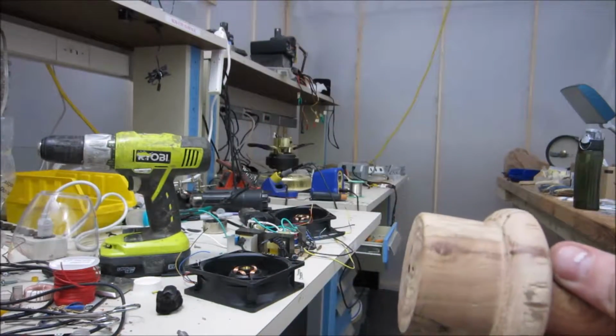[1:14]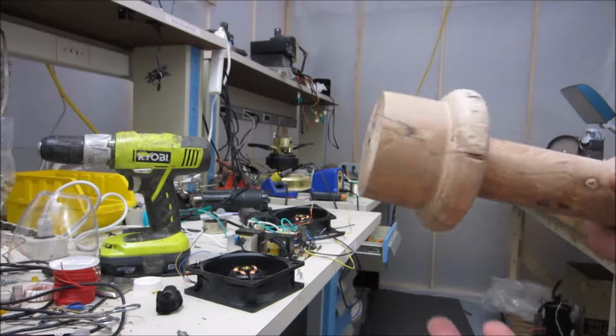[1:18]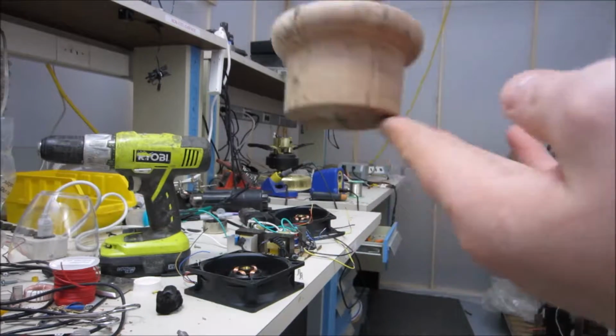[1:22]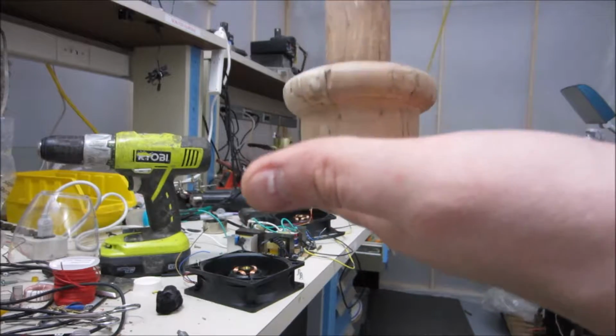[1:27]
This diameter is centered pretty darn well, but this direction is not perfect because I couldn't get these edges perfect. I didn't really have a tool to get these perfect, as ridiculous as that probably sounds. But if you think about it, it's kind of a tall order. Best I could think of was to just use my sander, my sanding unit, and then just kind of do this. But it's still not perfectly flat.
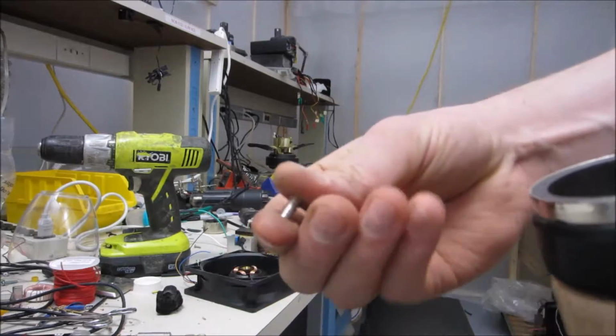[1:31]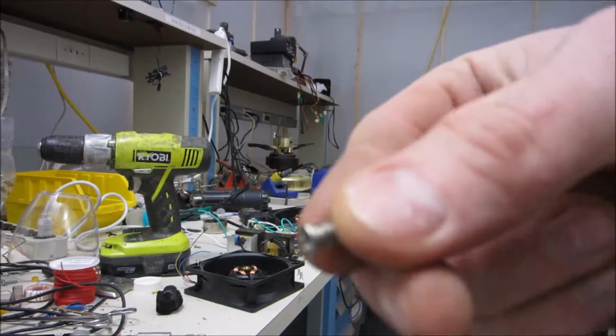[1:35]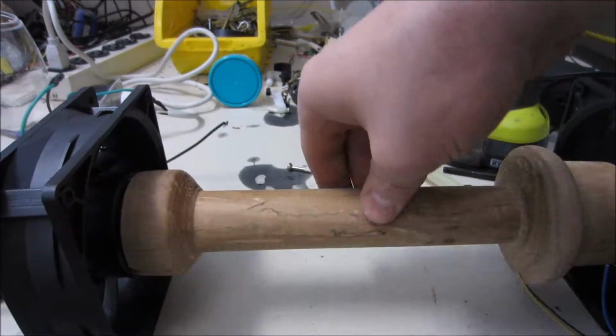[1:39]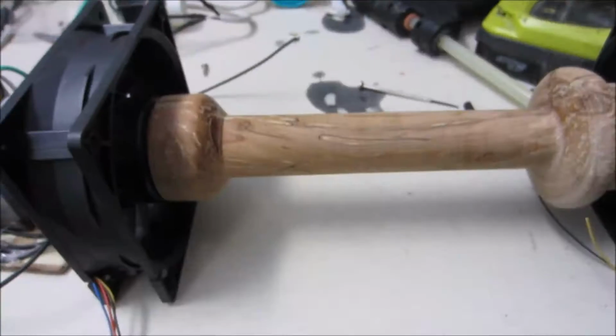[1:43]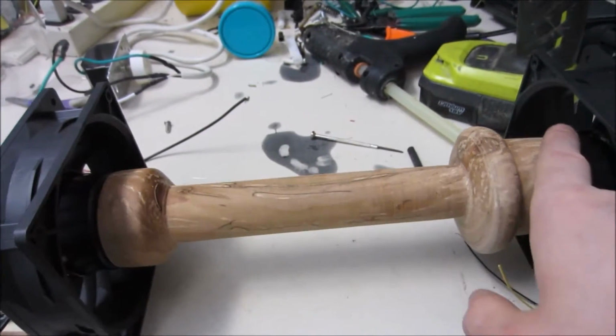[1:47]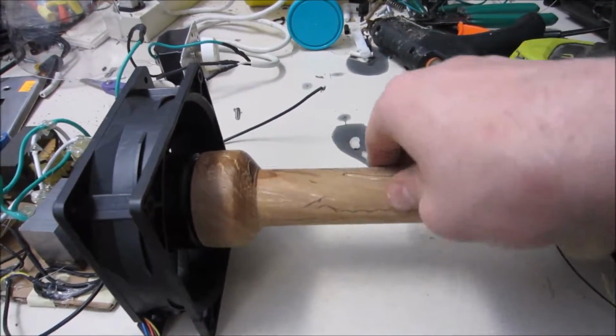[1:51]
I'm using these computer fan screws because they're very flush, and they seem to fit pretty well. This is clearly going to be a problem. You can see how much that's wiggling around. It's funny because I have these diameters matched so well in alignment, and yet the bottoms just aren't very flat, so it's having a dramatic effect.
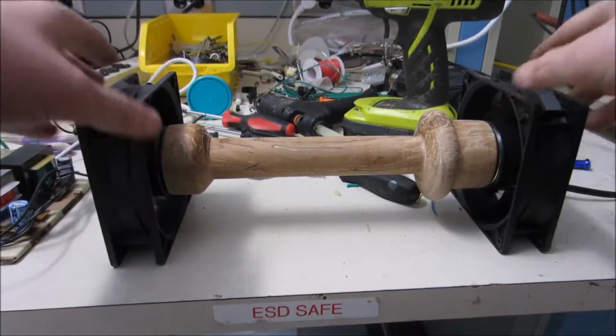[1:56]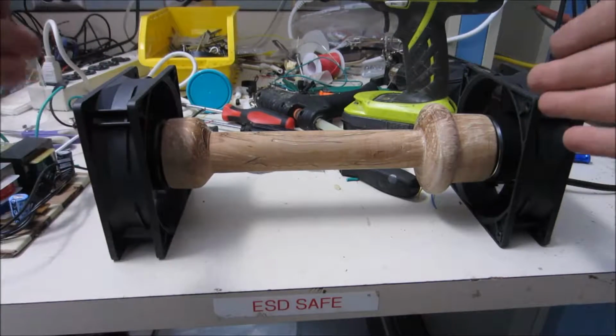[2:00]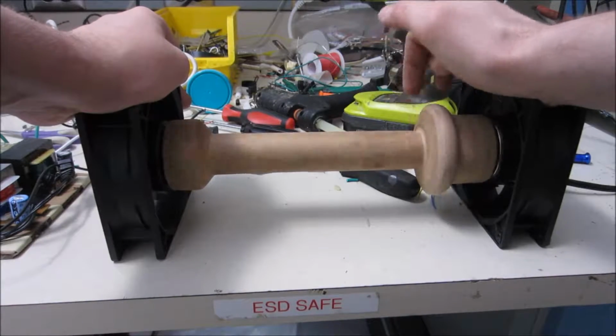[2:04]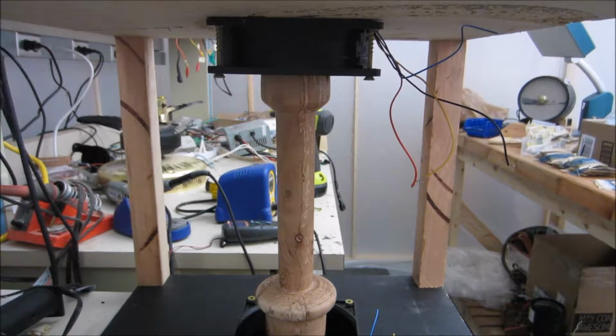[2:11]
It occurred to me that if I back off the screws on both sides, and I just break the glue that held the diameter positioning in place, then that will just let it do what it needs to do to keep the alignment just right. Well, it's probably a stupid idea, but I think I'm going to try balancing this by actually lathing it.
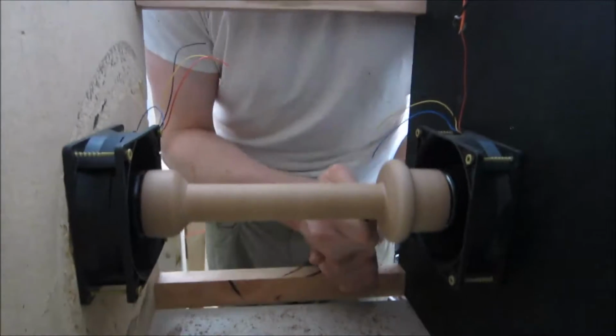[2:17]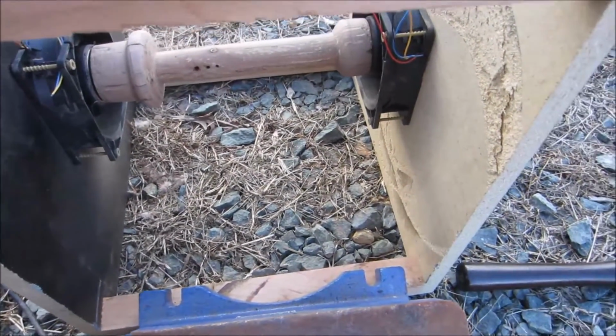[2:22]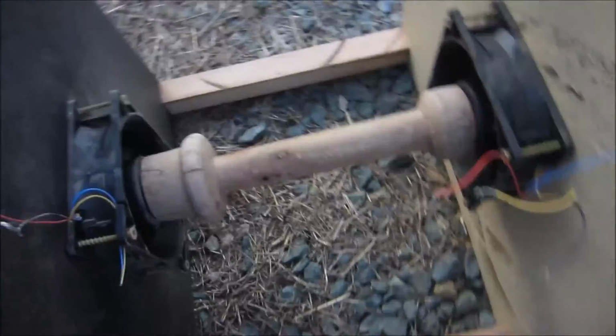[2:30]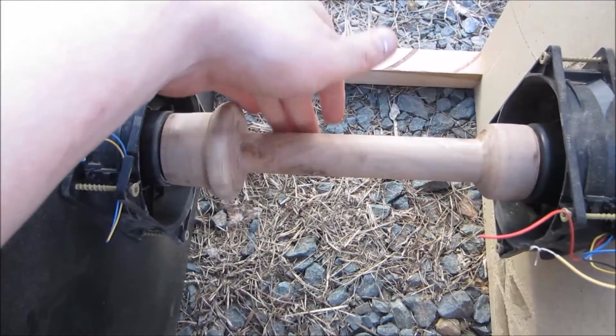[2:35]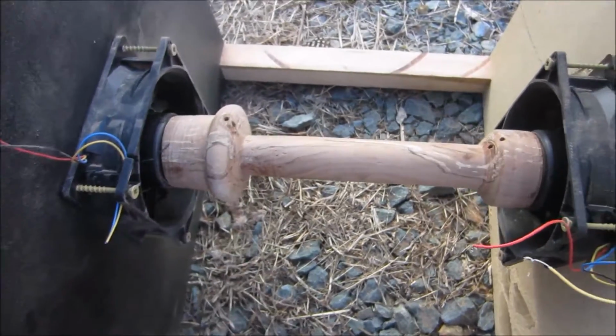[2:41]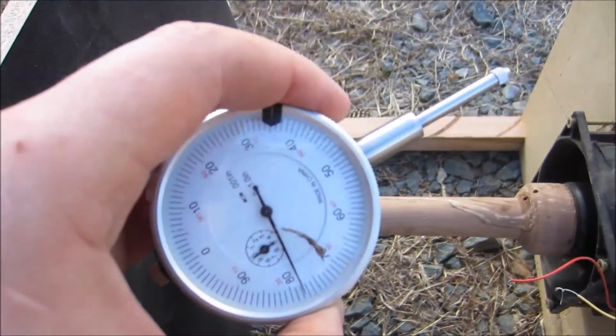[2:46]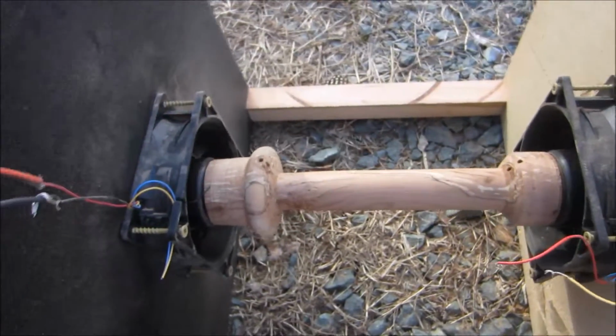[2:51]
Well, I've spent the last hour trying to balance this without much luck. No matter what I do, it still wobbles quite a bit. I tried a number of different things. I tried lathing it with tools. I tried sanding it. I tried using a Dremel while spinning it, which the sanding bit flew off somewhere. I can't find it. And I tried using this, which amplifies any deviations, to try to find out any issues, and then using a rasp to file those down.
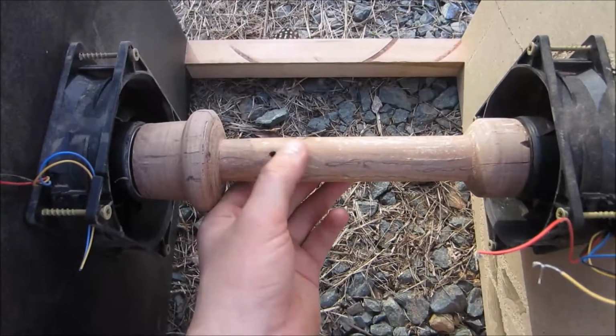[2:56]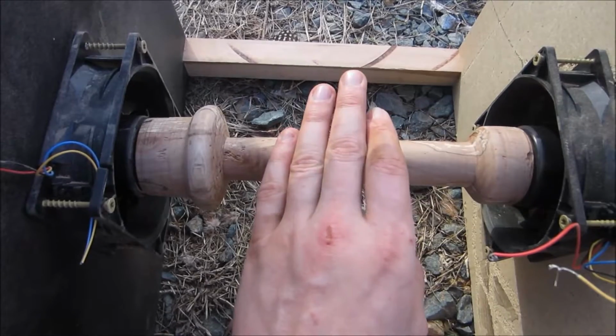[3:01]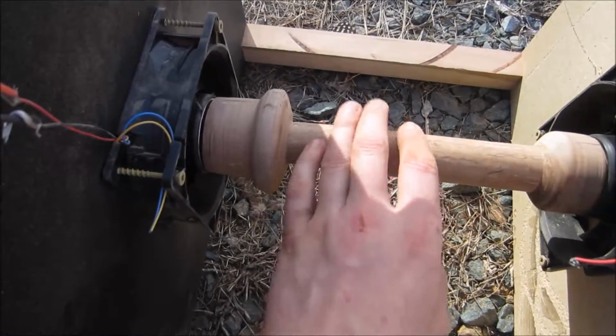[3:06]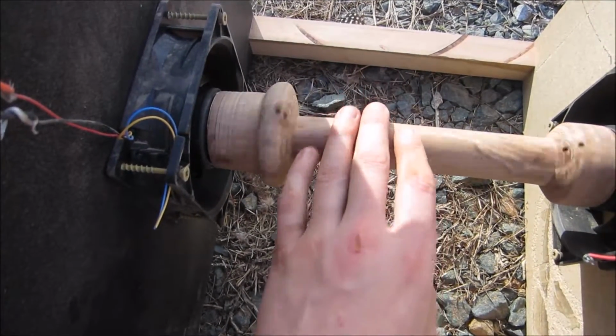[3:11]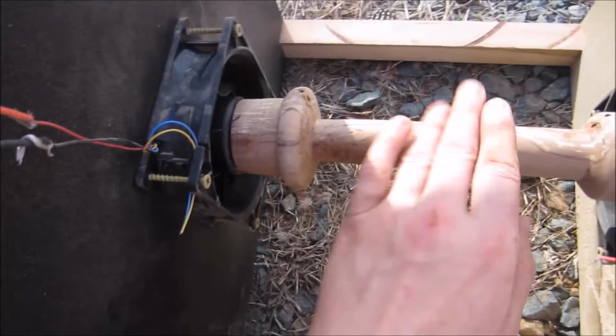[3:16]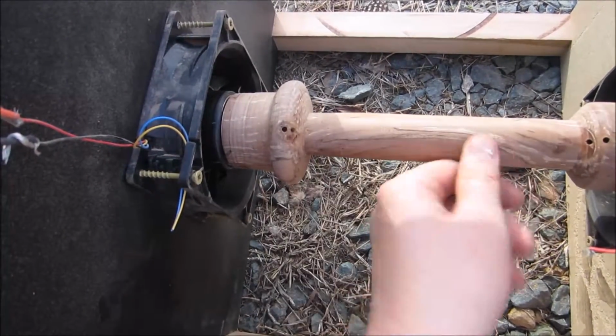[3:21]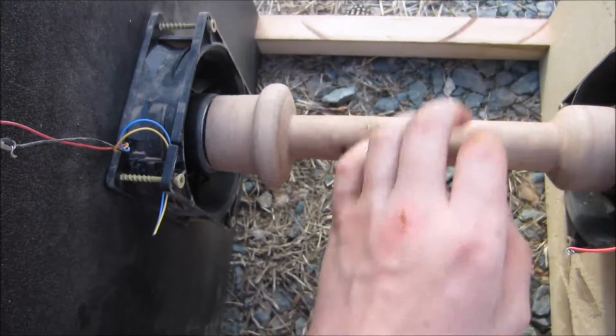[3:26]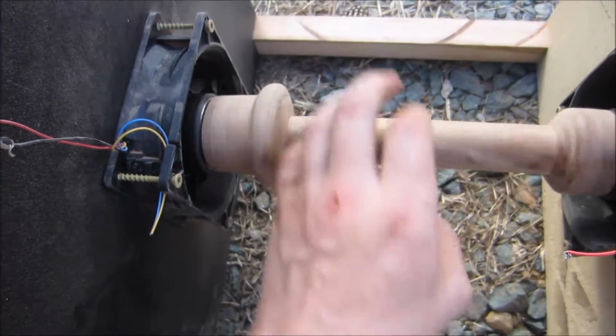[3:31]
I tried drilling out areas that seemed a bit heavy, but the problem is that, see how that just wobbled there? It's because it's getting sucked on to a point where the coils and the magnets are aligned, it gets stuck. So there's no way to really balance it. I tried bringing it to top speed and then letting it back down, but I couldn't get a consistent result. So I tried drilling some areas that had knots, things that I thought might have a higher density. I tried a lot of stuff, and I got nowhere. Just nowhere.
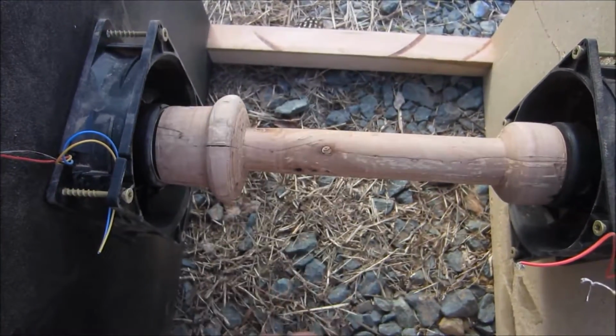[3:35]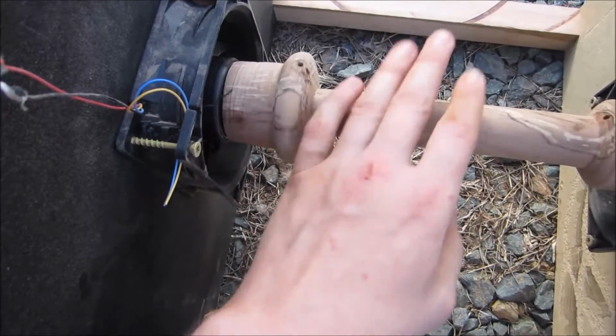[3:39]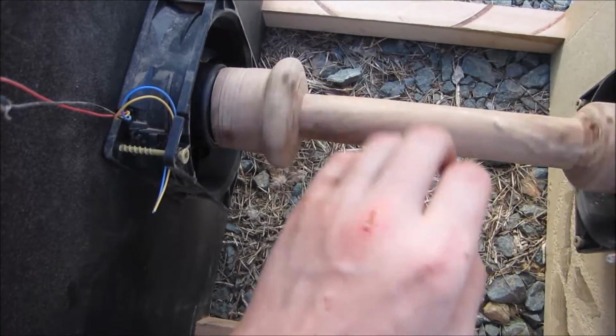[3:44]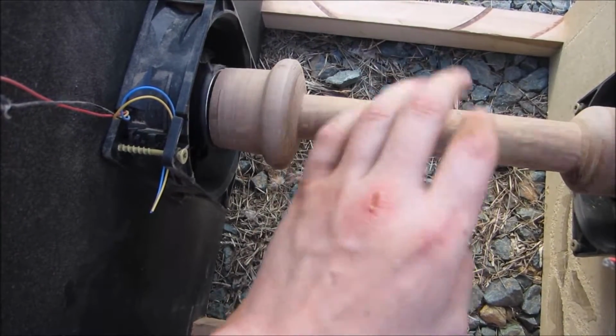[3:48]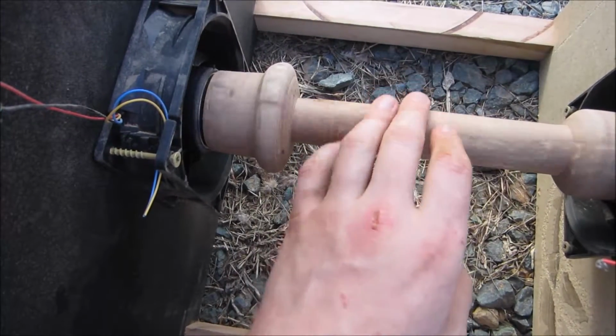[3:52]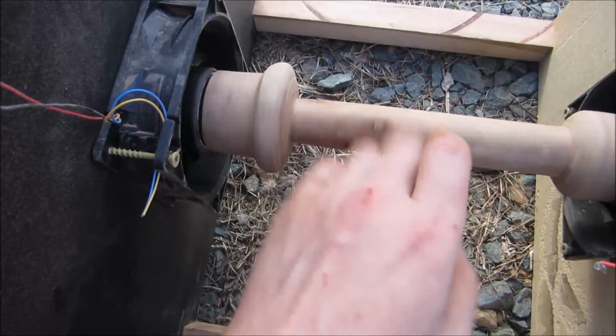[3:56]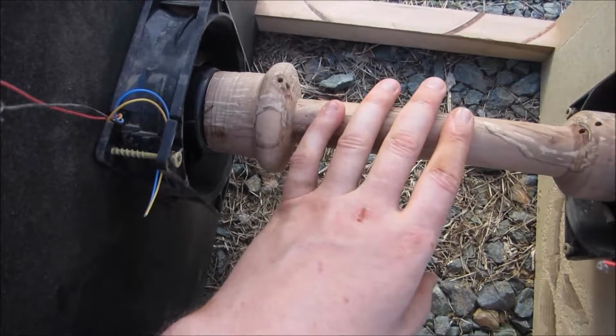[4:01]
I think I may just have to live with this being a little bit off. And at the time I had thought, oh, I'll use wood, that'll be kind of novel. But I guess there's a good reason not to use wood to make a centrifuge, and that's because it's far more inconsistent than I had imagined. Like, the smallest bit being off is enough to cause this thing to vibrate like mad.
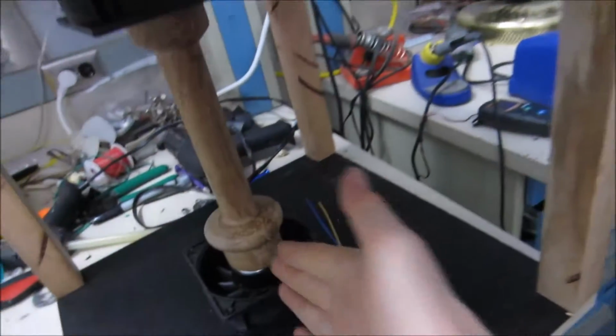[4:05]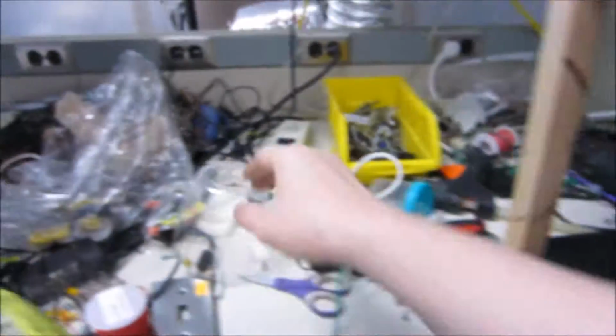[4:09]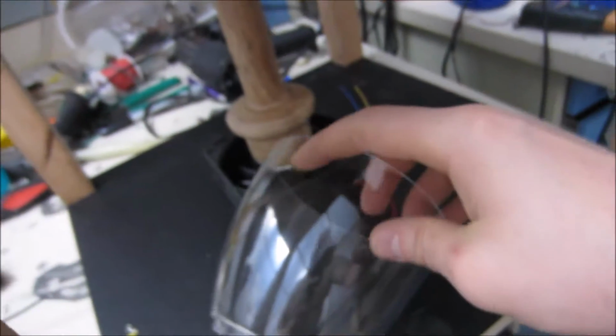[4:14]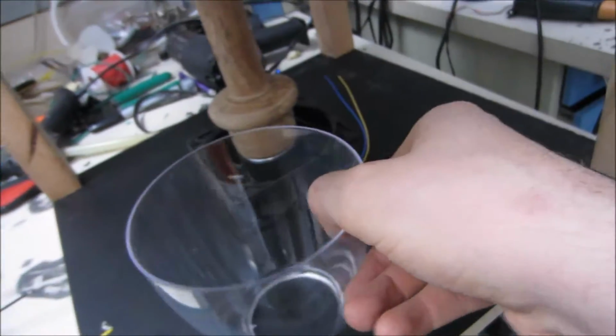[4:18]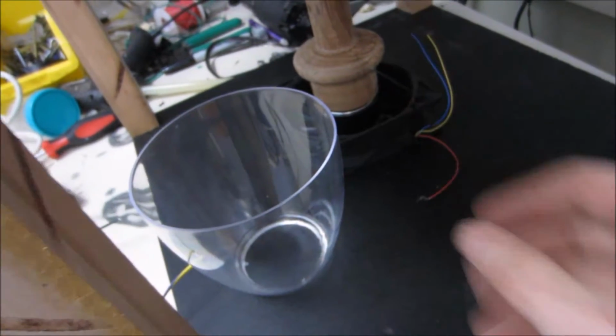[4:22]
There's just not anything you can really do about it, because wood is naturally going to just be inconsistent. Well, I have this basic frame done, and there's plenty of space so I can use lots of different things in the centrifuge. I have a couple more things left to do. I'm gonna have to put in some slots or something to actually put my media jars in. I have a whole bunch of these. They're from some lamps. They're like covers for shades.
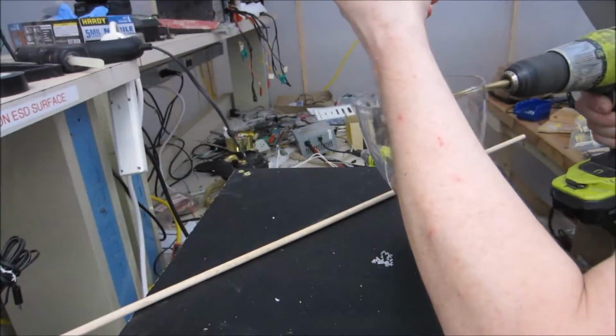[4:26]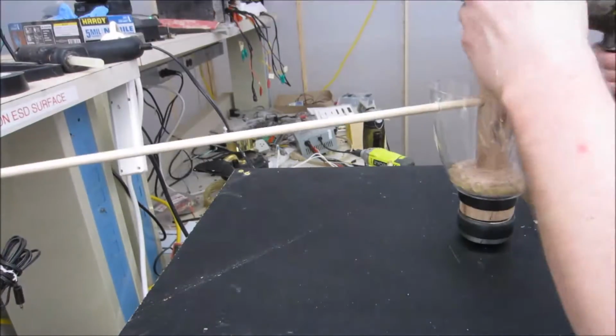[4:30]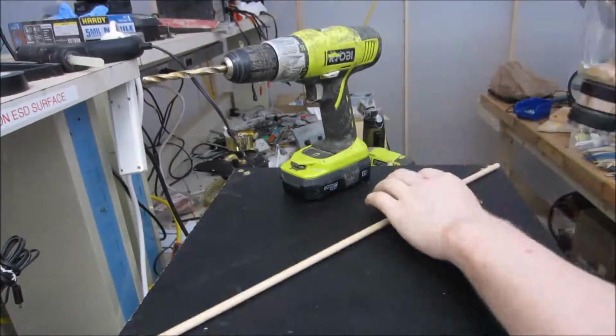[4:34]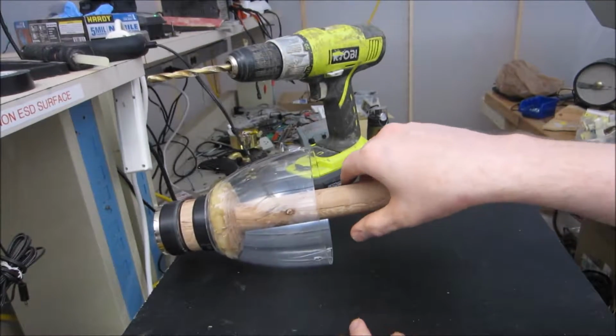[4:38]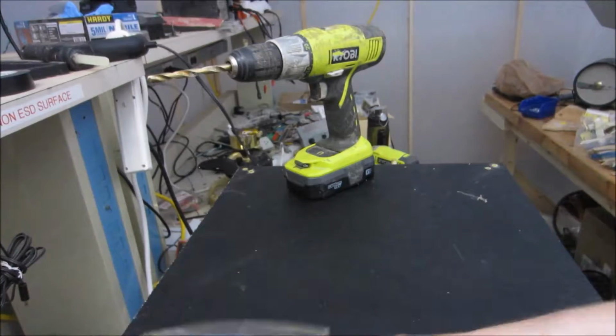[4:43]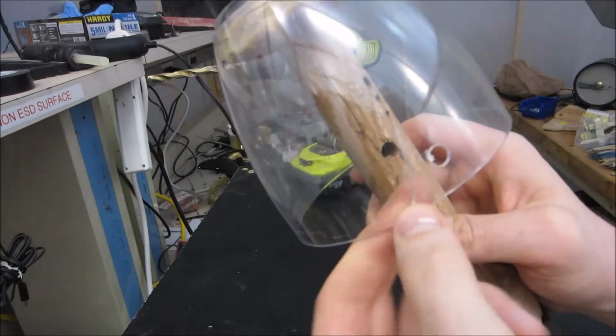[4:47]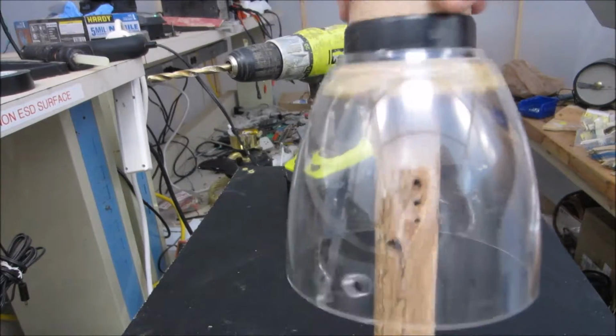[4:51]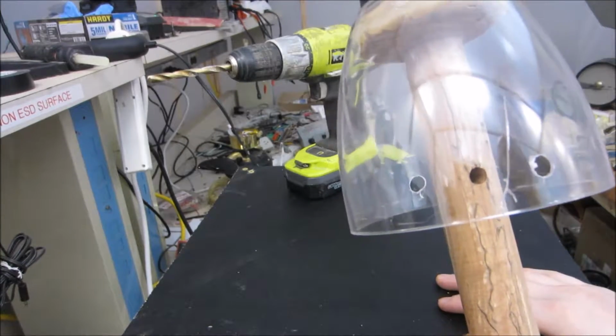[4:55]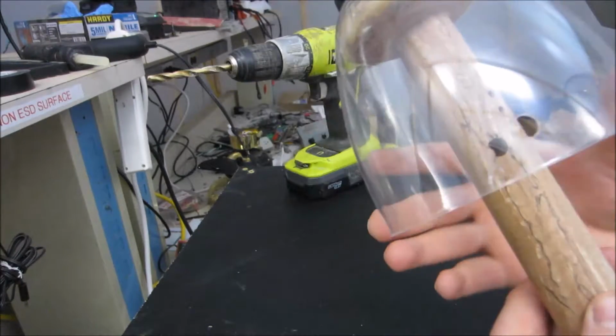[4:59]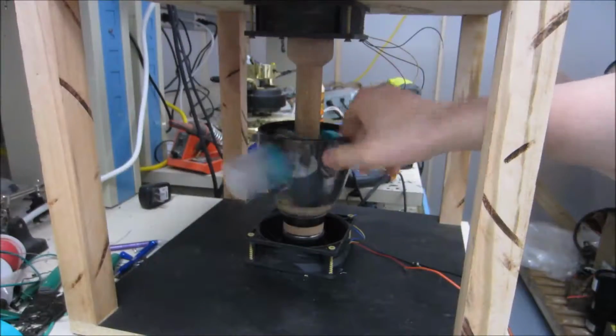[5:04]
Frack! I walked away for a second. This thing was just sitting here, perfectly fine. And then I come back and it had rolled off. And of course it cracked right here after I had oh so carefully glued everything in and gotten it just aligned right. Now it has a crack, and I know the integrity is going to be far too low even if I try to repair it. I suppose if I ran a band around it I might be able to, but I might as well just start over.
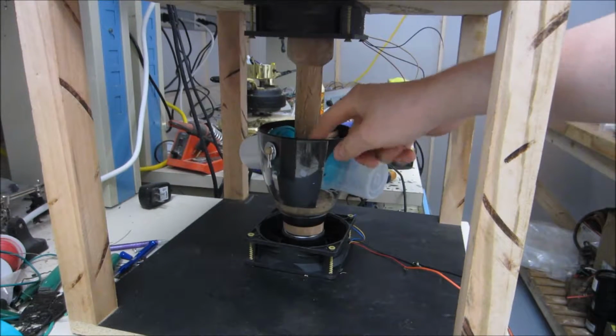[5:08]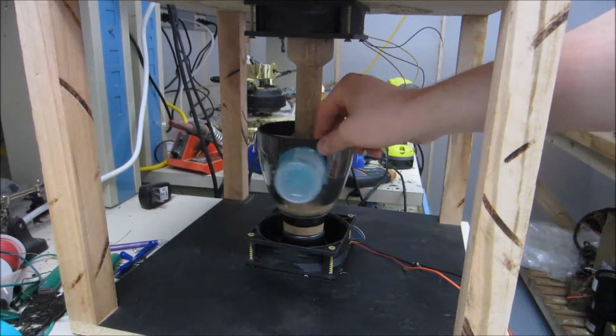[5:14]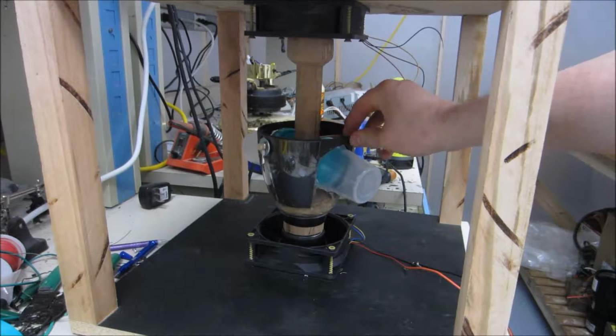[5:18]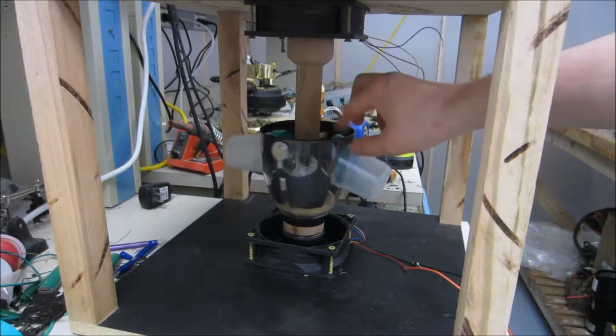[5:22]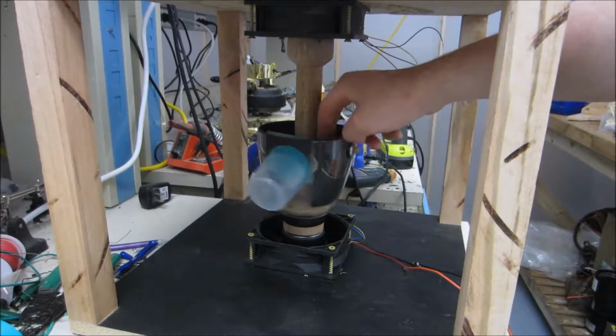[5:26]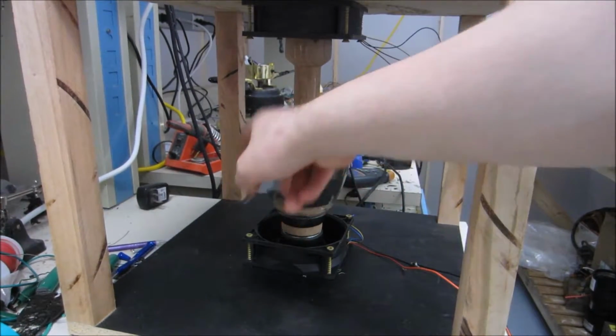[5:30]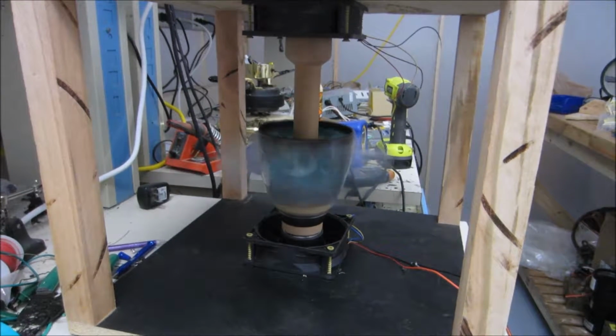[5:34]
I just got this together. I ended up putting an inner lampshade that had come with this. So there's a clear one on the outside, I think it's ABS, and then there's what feels like an HDPE layer on the inside. Both of them are probably rated for relatively high temperature. I also stuck a dowel to help stabilize it through here. So this is a dry run without anything inside of these containers, just to see how well balanced it is.
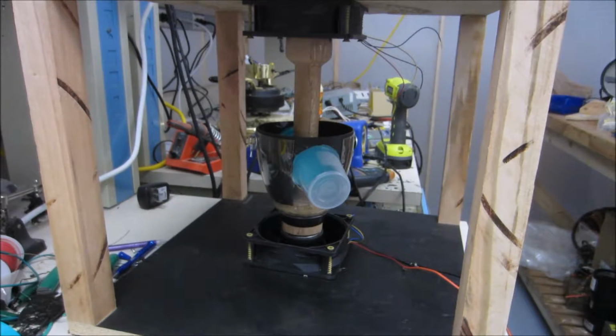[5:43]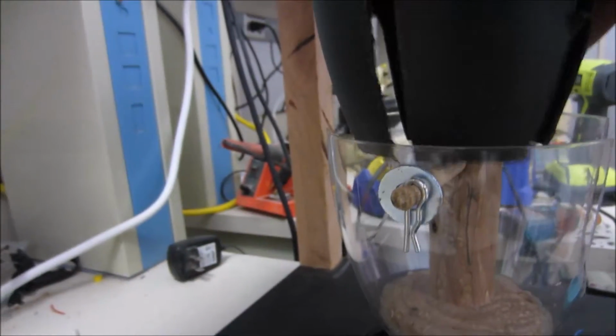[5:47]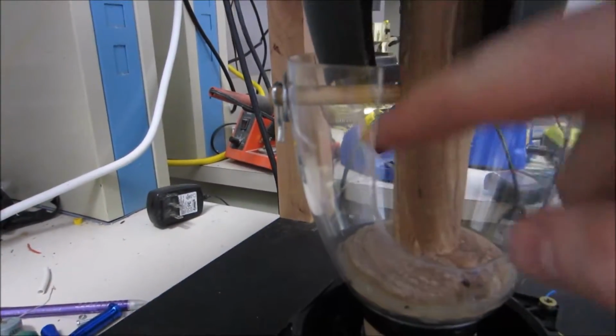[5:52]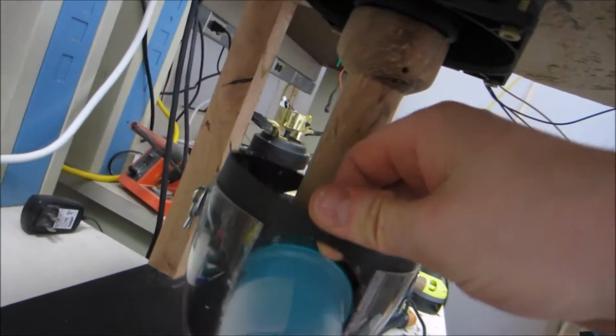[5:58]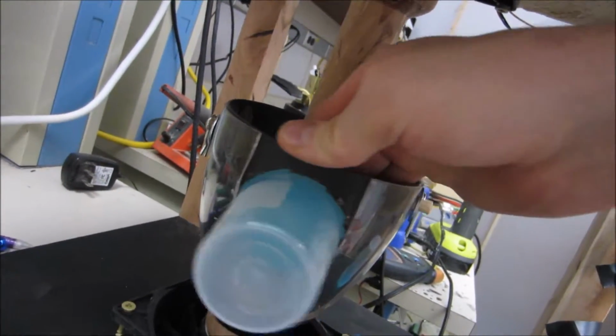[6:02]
This worked pretty well. So here you can see how this actually goes together. It's basically just a positive and then negative. So right here are my holes for these containers. So they slot in like this. And then this one fits around it on the inside. And between the two of them, it completely encapsulates it to help keep it from flying off. The other reason for it is I feel like it's going to help make this a little bit stronger.
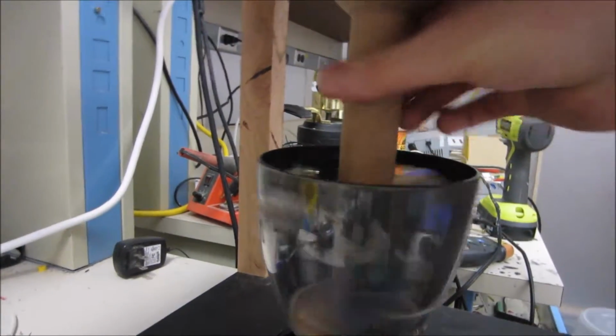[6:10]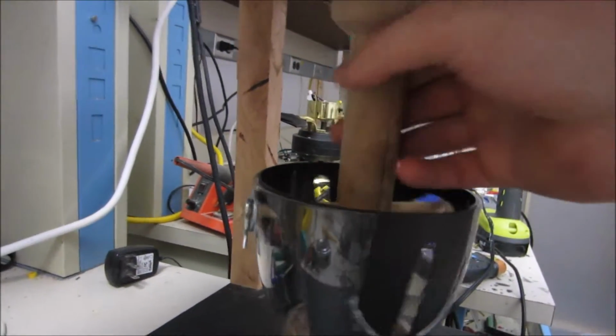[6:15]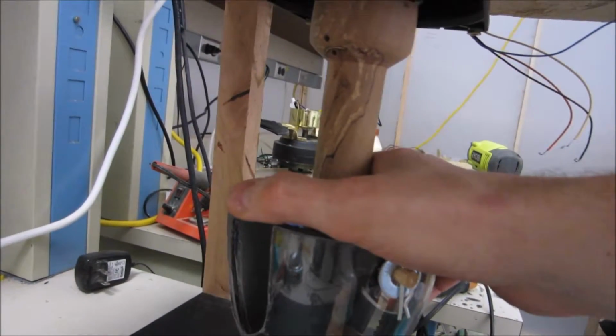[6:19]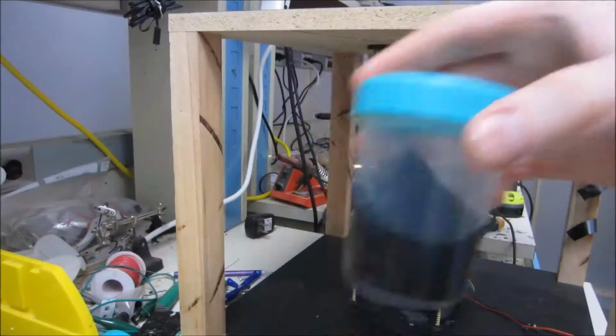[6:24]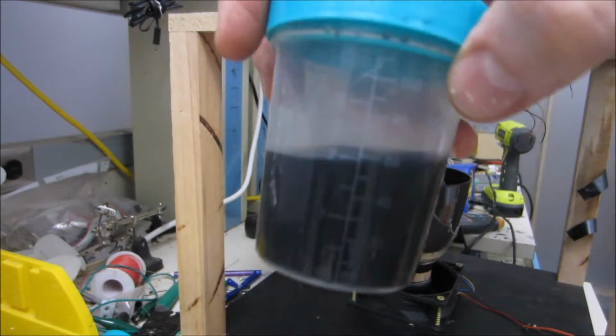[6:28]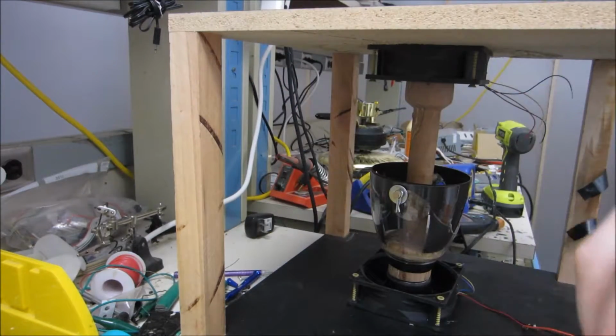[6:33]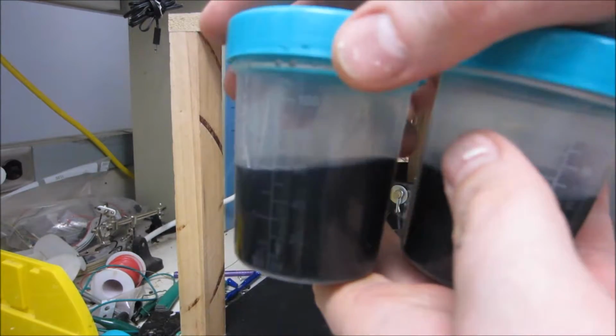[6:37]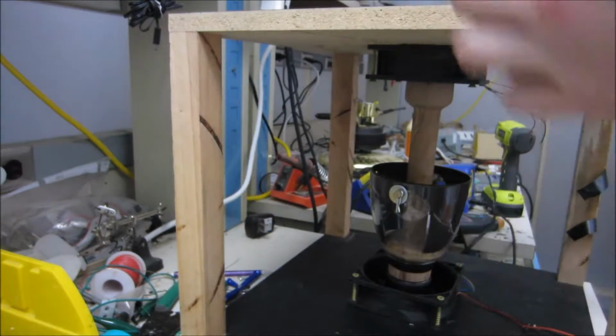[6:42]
Overall, I'm surprised at how well balanced this seems to be, because I haven't done anything asymmetrical to balance it. So my guess is the reason it seems more stable is simply because it has less speed because it has more load. So I have here 60 milliliters of an extract that is mostly very fine suspended particles, but there's some larger ones that get stuck in there as I extract, unfortunately. I have two of these at the same amount, so 60 milliliters each. Should be pretty well balanced.
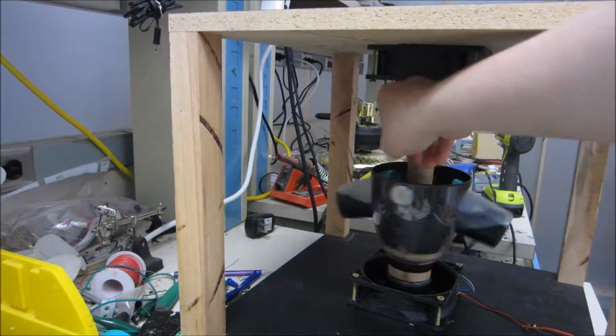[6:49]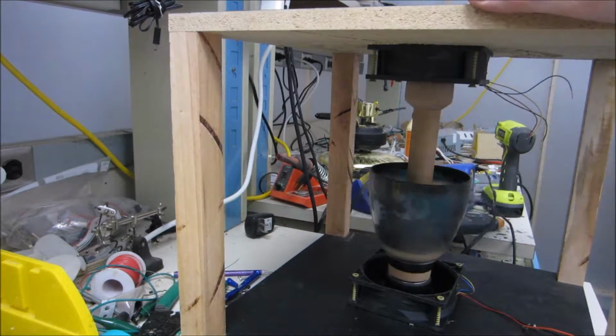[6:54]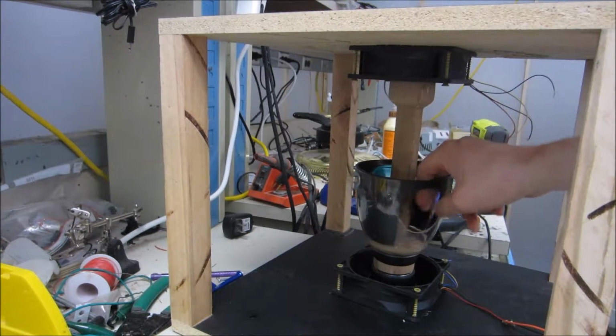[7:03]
Time to give this thing a run with some real load. So that's a total of 4 ounces, which is probably going to stress this plastic quite a bit, so we'll see what happens. Shit. That's interesting, oh wait, there it is. Yeah, it broke the plastic. That's pretty disappointing. Apparently this just isn't strong enough. You see it got a little bit everywhere.
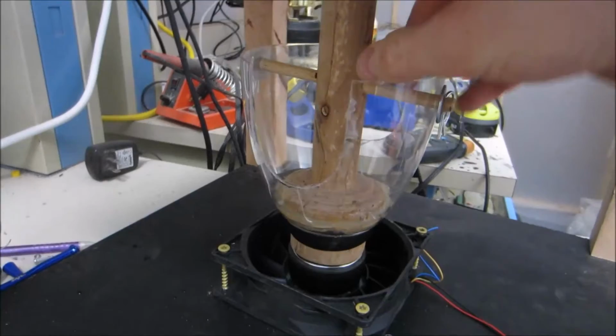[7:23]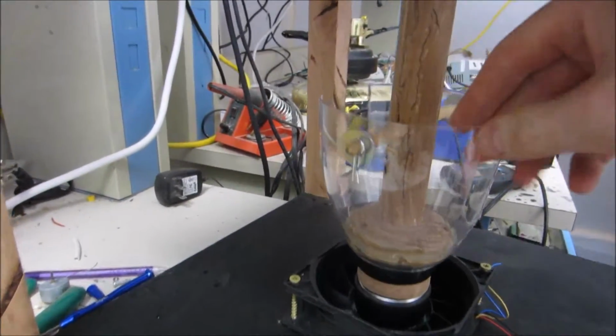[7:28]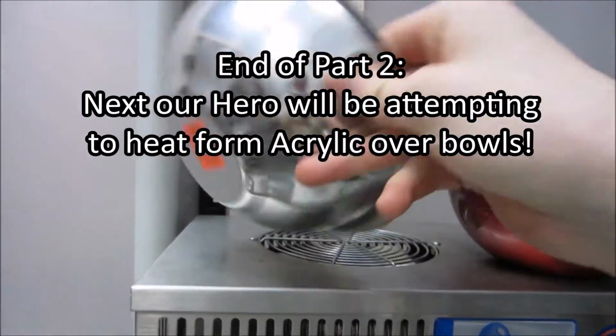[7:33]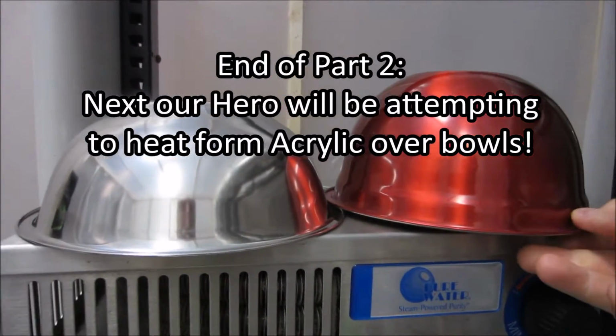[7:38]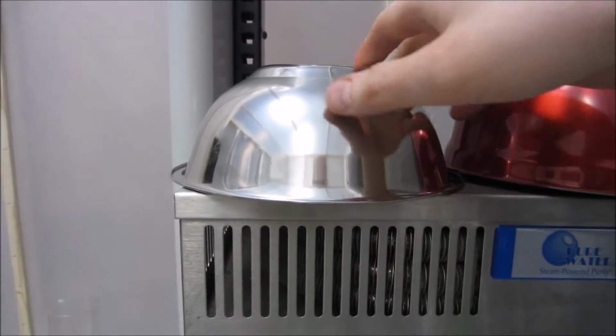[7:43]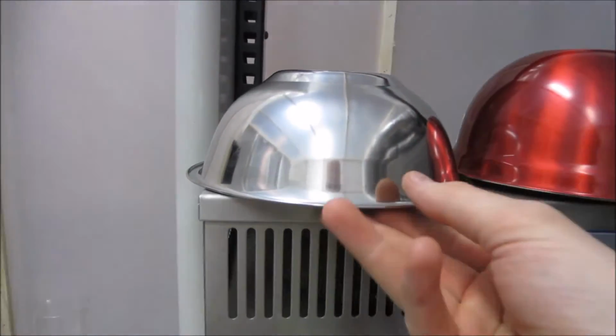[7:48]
I guess the next step is going to be switching this out for something that's strong enough to actually contain it. It's probably for the best. This system was kind of a pain in the ass. I picked up a couple of bowls to potentially handle this situation. I wasn't sure which would make more sense. Kind of thinking this one. So what I guess I'm gonna do is take some acrylic and heat form it over this, and hopefully that will work out okay with just a heat gun.
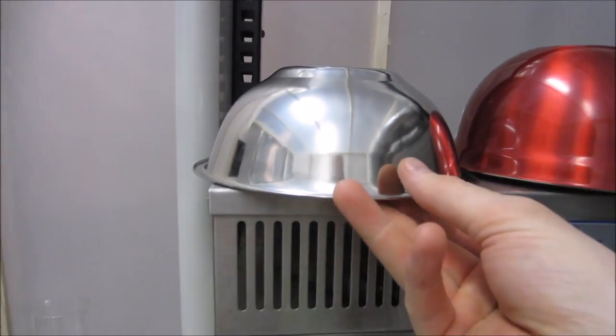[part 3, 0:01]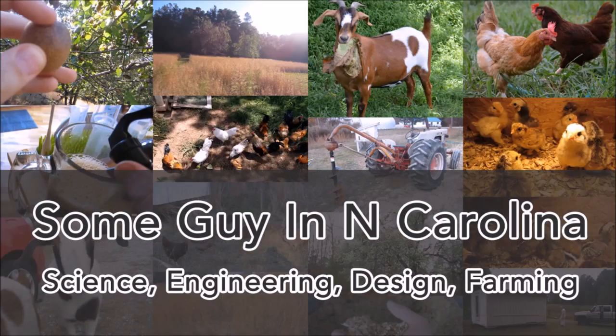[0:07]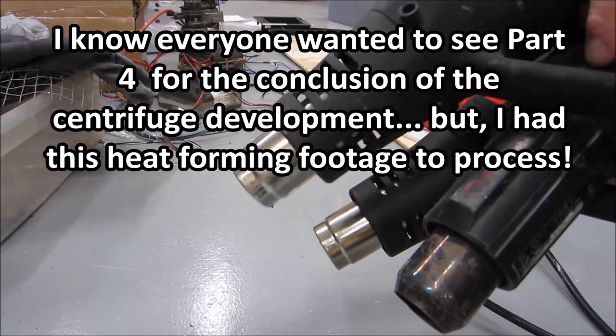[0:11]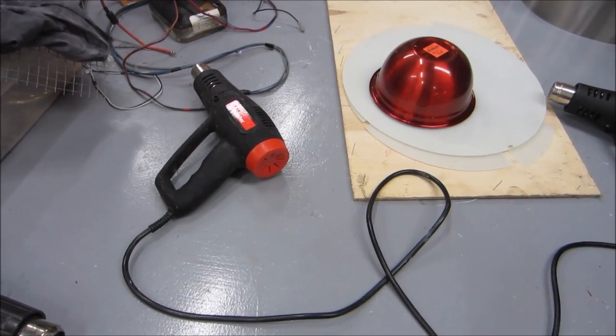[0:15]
Take some acrylic and heat form it over this. Hopefully that will work out okay with just a heat gun. I tried 3 heat guns at once even. I was doing something like this with all of these on, and I still could not consistently melt acrylic enough to be formable. So I finally broke down, and I used the toaster oven.
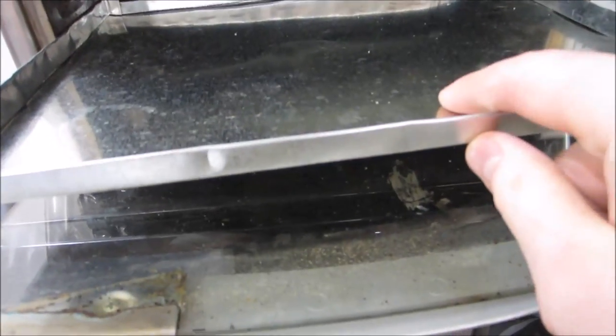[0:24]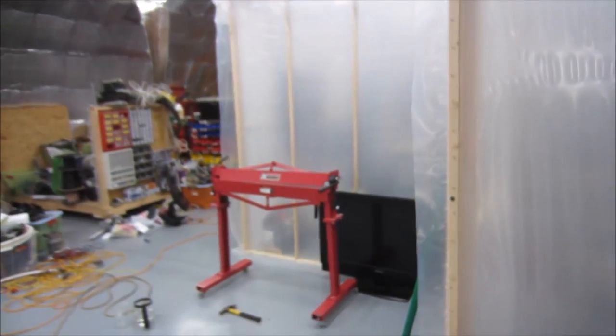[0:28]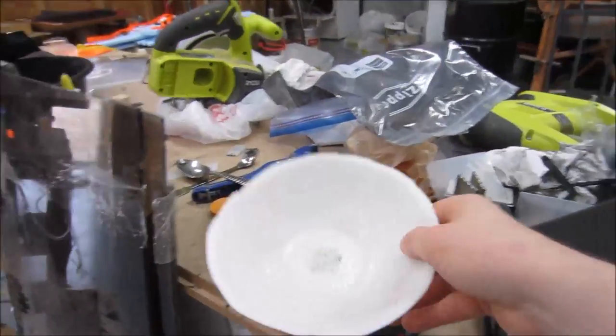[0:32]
I threw together a quick baking sheet from some duct steel using my metal brake, and I was able to get the plastic actually too hot. You can see here it actually got a little bit bubbly.
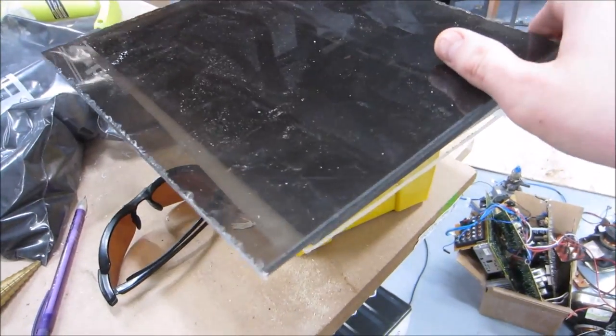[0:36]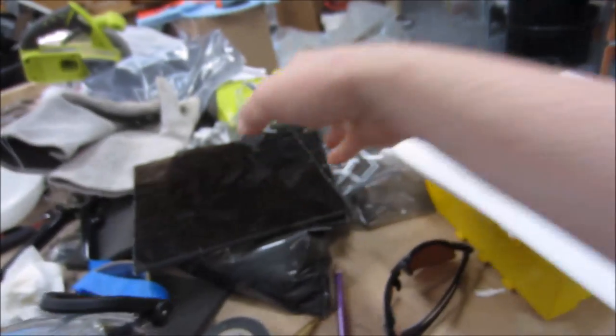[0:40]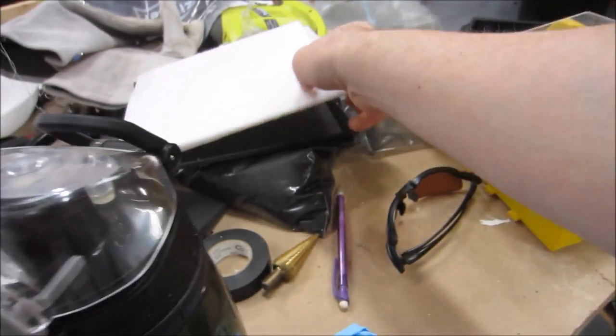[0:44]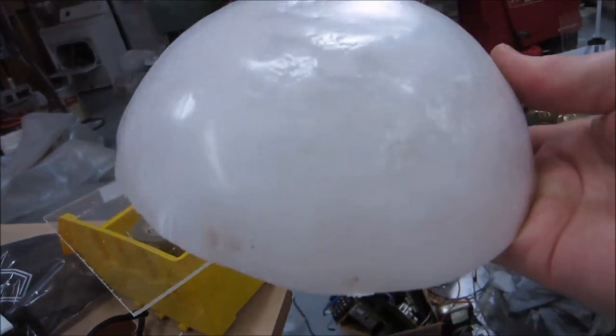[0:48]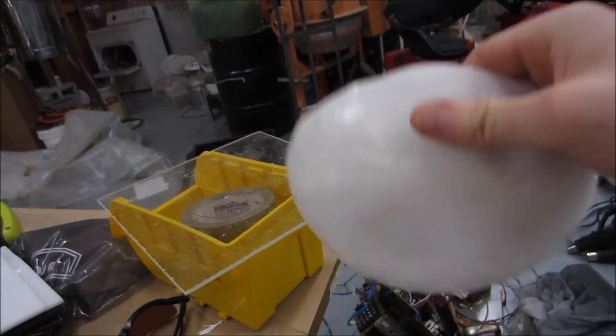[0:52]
A whole bunch of these plastics to try out. I have 2 sheets of polycarbonate, which I'm not too hopeful about, a couple sheets of opaque acrylic, and a sheet of clear acrylic. I'm pretty sure this was HDPE, and the result was only so-so with this, so I'm hoping that one of these other types of plastic will work a little better.
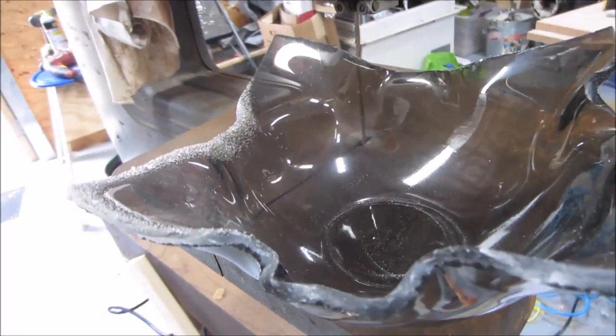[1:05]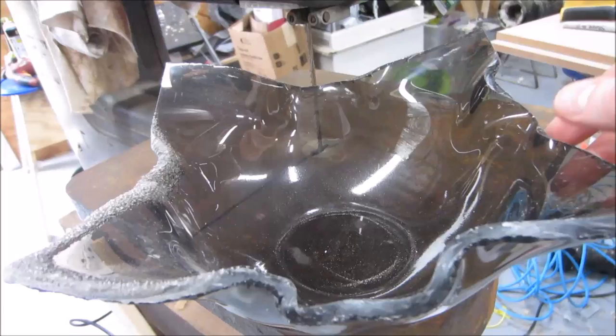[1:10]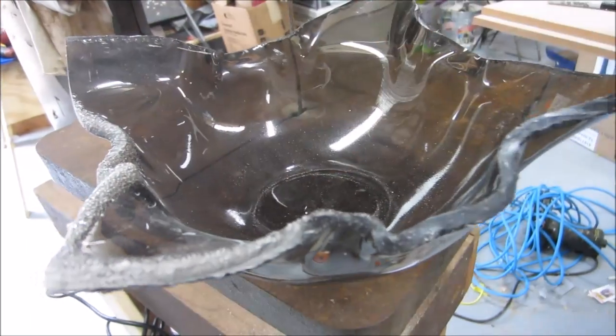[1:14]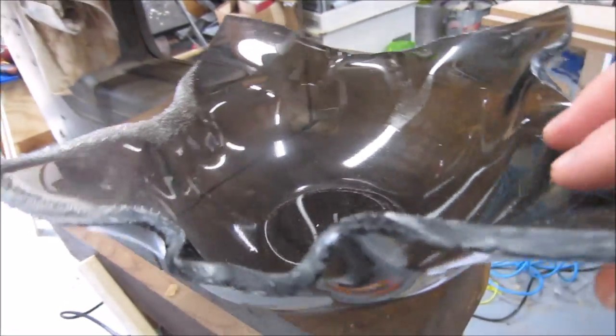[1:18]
I have to say this is a bit odd. This actually started to bow this way from the heat. At 250 degrees Fahrenheit, for, I don't know, 5 minutes or so, I did get a little bit of bubbling on one side. That's just because of uneven heating, most likely. And I was able to get a really fantastic bowl shape.
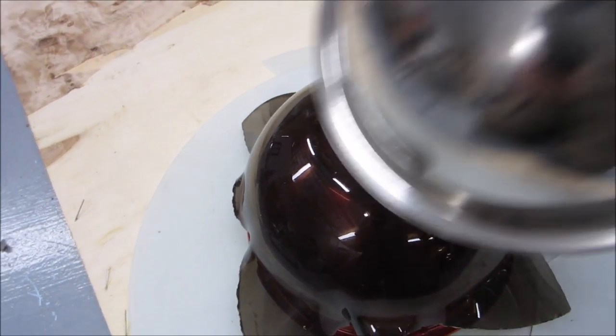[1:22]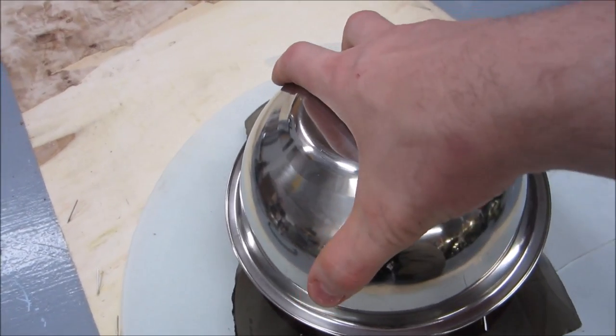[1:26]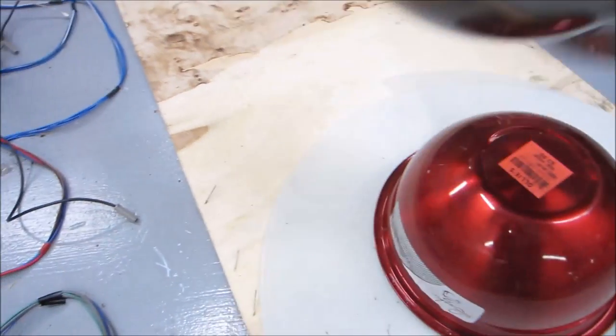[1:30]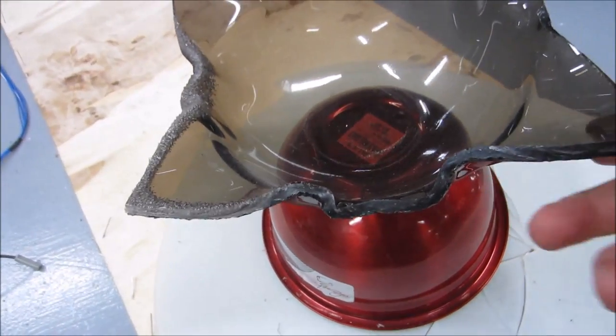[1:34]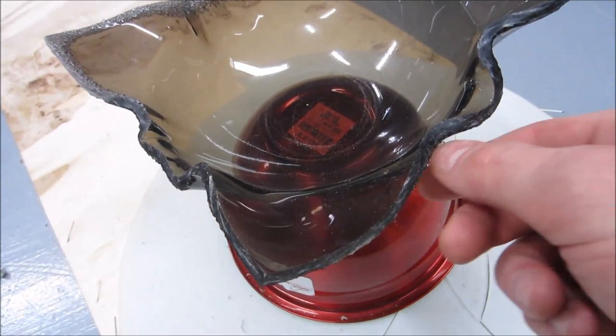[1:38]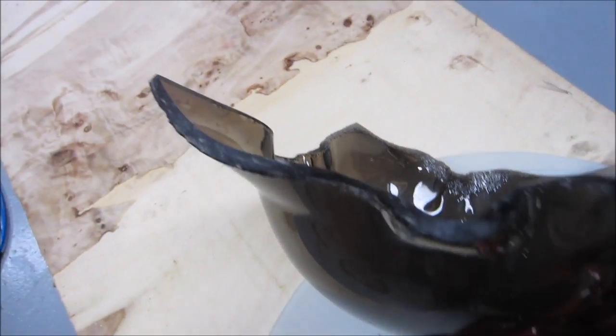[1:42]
I put the sheet over this, I was wearing welding gloves, and then I put this bowl on top, and I pressed my entire body weight down. And I held it there for a few minutes, and I was able to get this nice shape out of it. Now the only problem is the thickness of this polycarbonate is gonna be an issue with machining it.
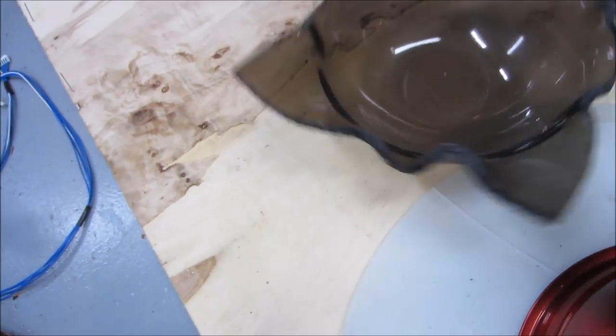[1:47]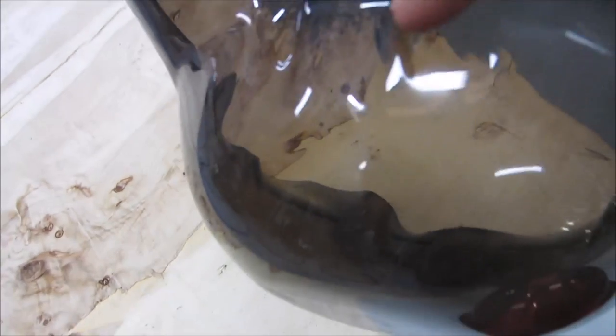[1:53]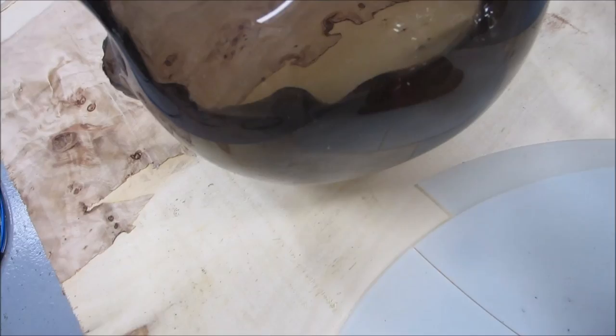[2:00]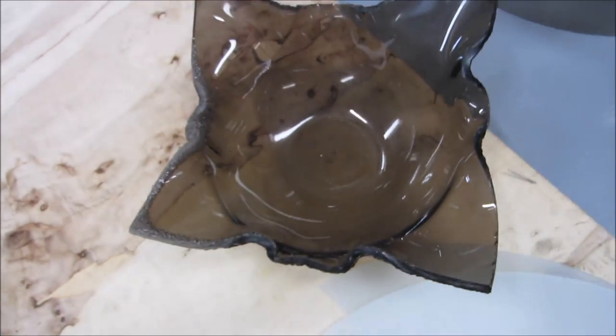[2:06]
I'm impressed that I was able to get such a nice form, but by the time I clean up these edges where it's sort of crimped, especially right here, you can see there's some points right there. So, you know, I have to avoid those, and by the time I avoid those, I'm not gonna have a whole lot of bowl left. So this is a pretty cool result in general, but I don't know that I can use it for my centrifuge.
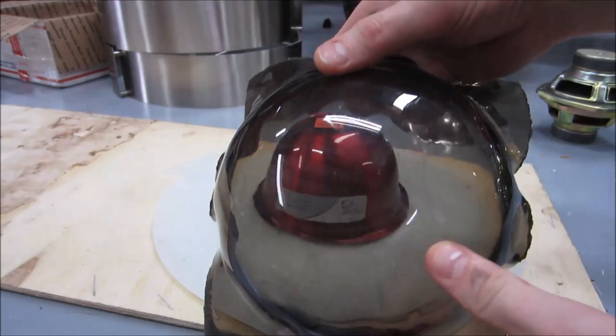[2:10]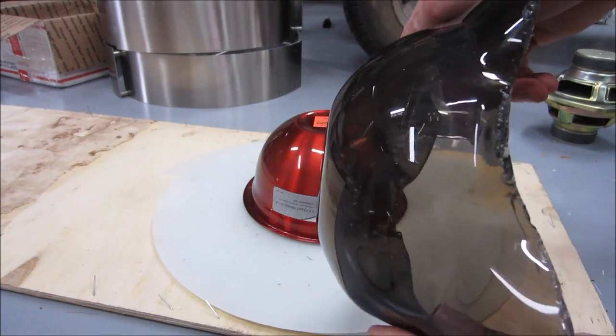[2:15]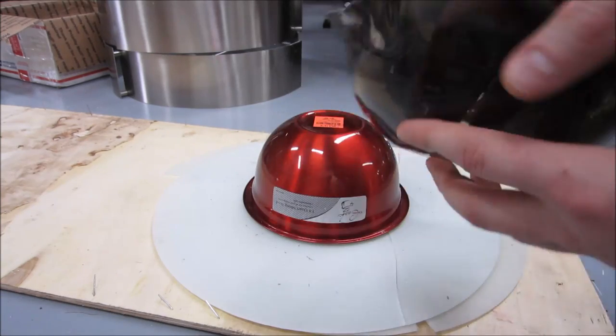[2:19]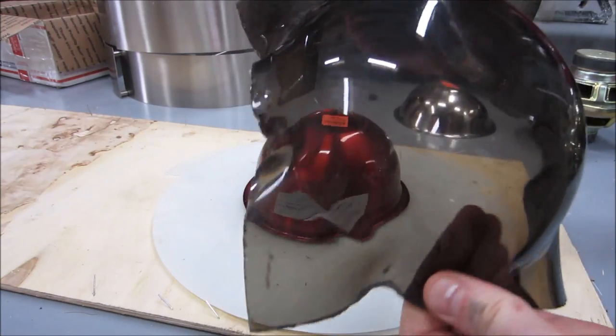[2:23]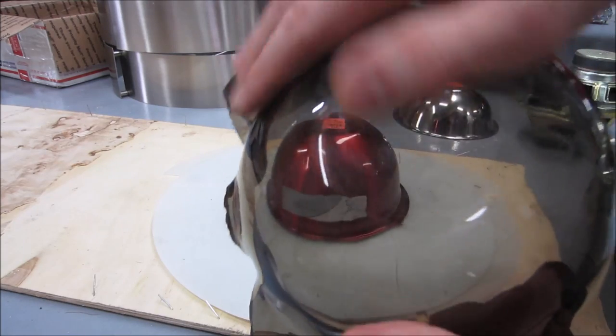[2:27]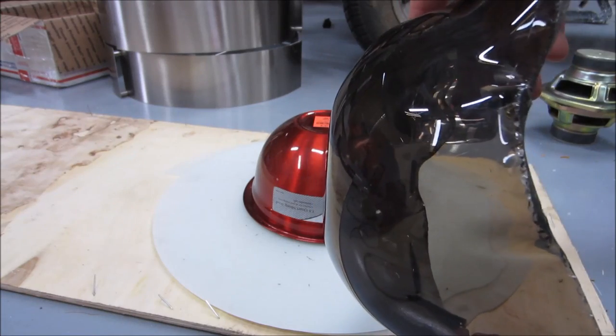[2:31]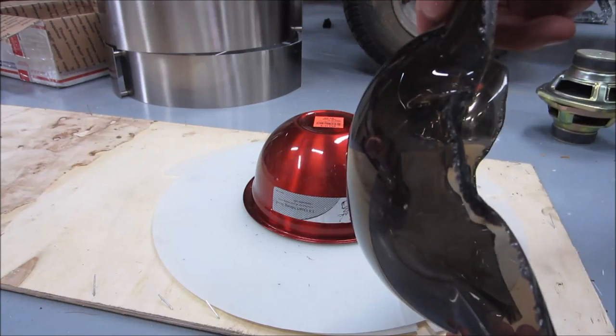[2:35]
You know, it's funny, the more I look at this thing, the more I think I could do some really nice dome work with this polycarbonate, because this stuff is a great window, especially because it already has this tint to it. I think it would block a fair amount of the sun, but still let some through. And I don't know what I have in mind for it yet, but I mean, look at how beautiful that turned out. It's really inspiring.
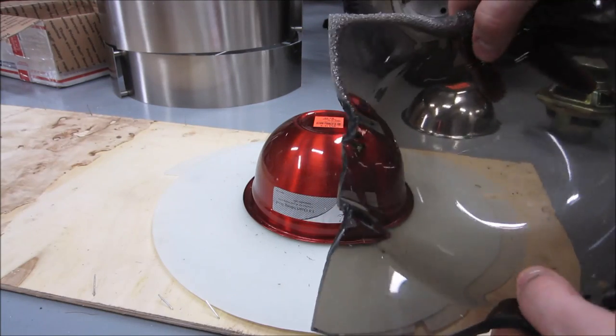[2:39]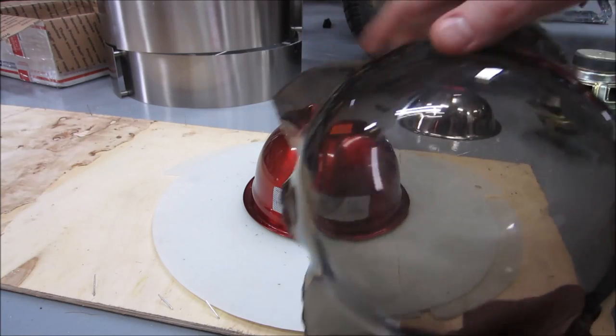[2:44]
It's just so hard to fabricate things like this, and plastics are one of the few materials that work well for it, especially when it comes to transparency.
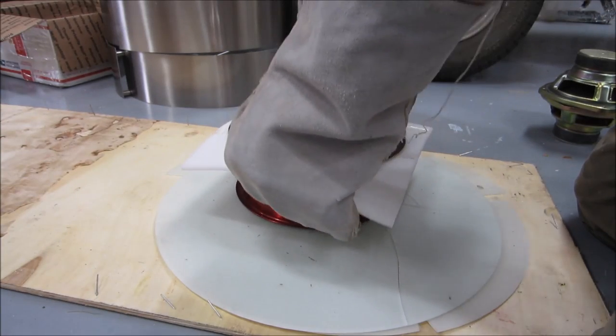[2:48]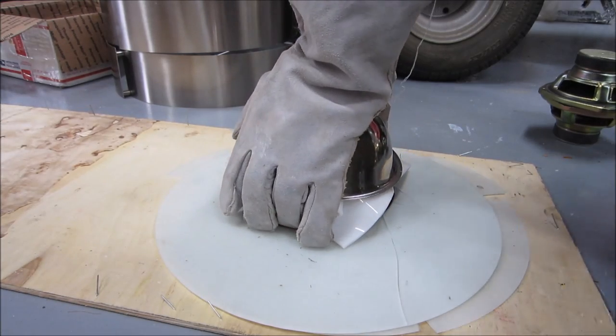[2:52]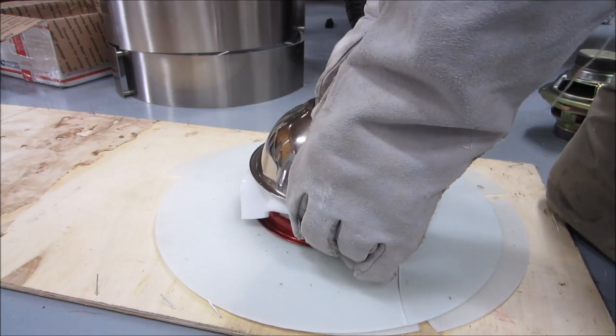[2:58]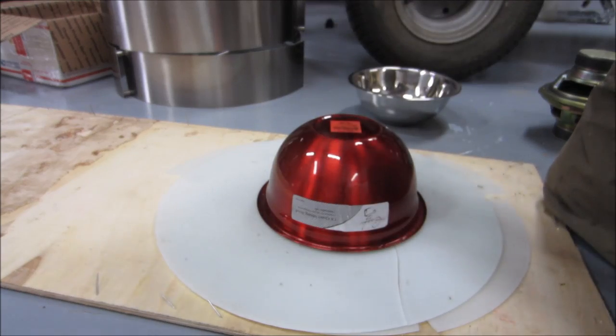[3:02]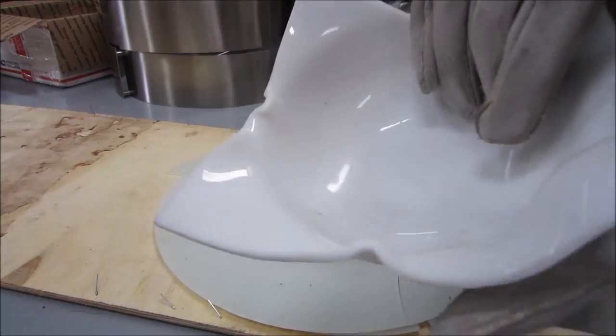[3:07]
That's going to be a big problem right there. This is totally unusable.
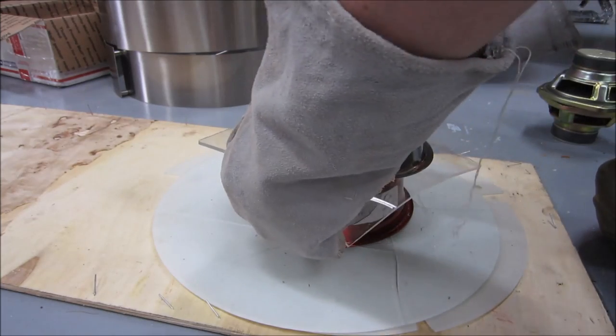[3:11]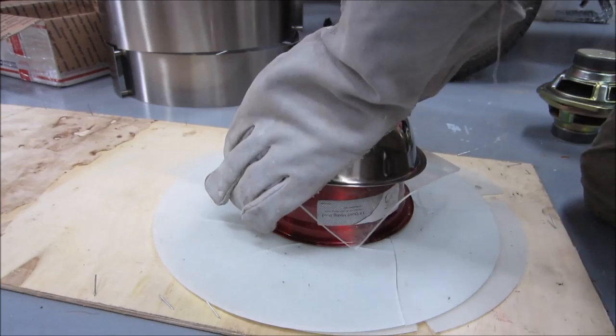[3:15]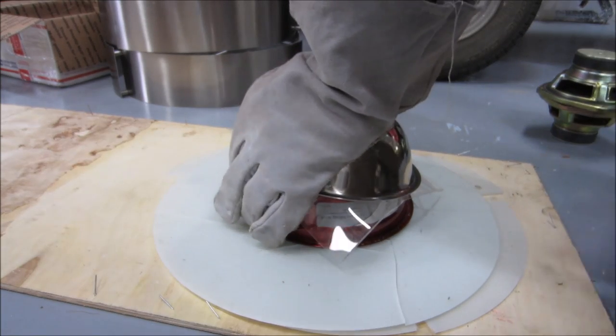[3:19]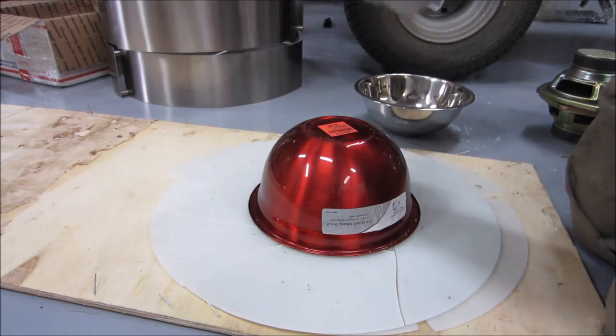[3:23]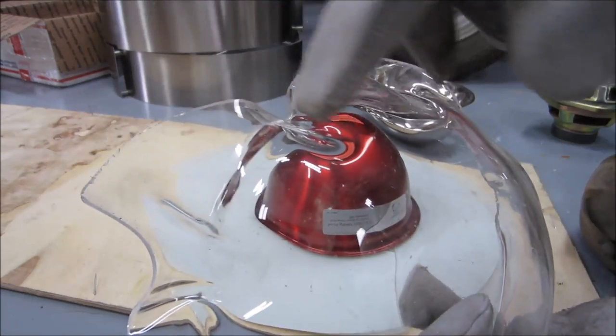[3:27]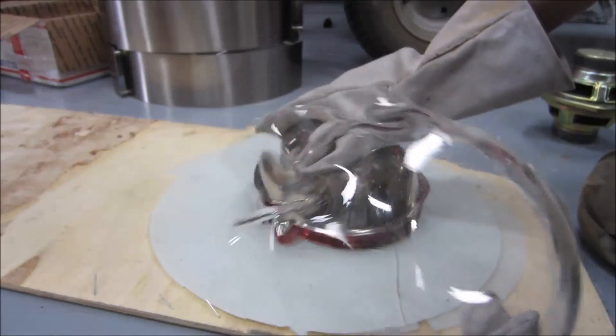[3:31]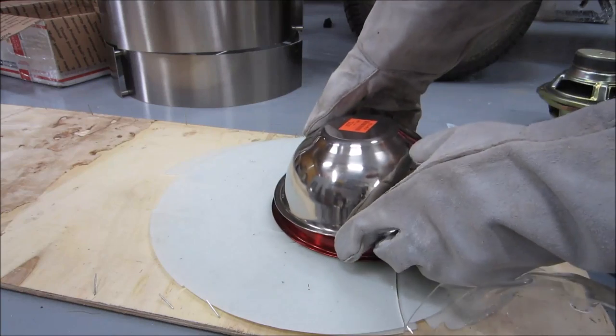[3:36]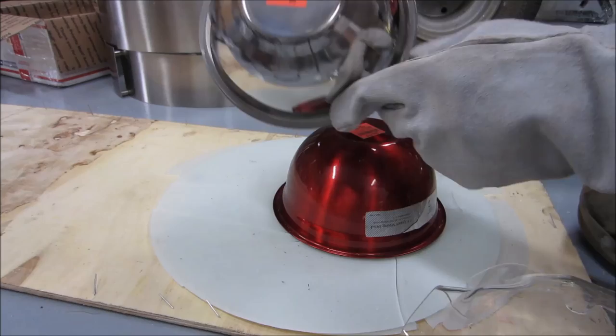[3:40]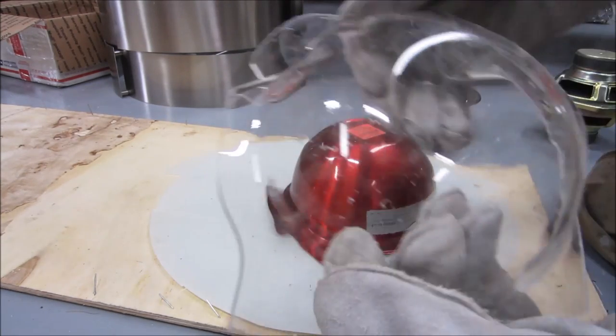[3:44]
Well, I keep having the same issues, which are these folds here, you know, and I think it's probably, at least in part, because of these bowl shapes. This bowl is not made to fit over this other bowl. They're just, you know, a couple random bowls. It's kind of a problem.
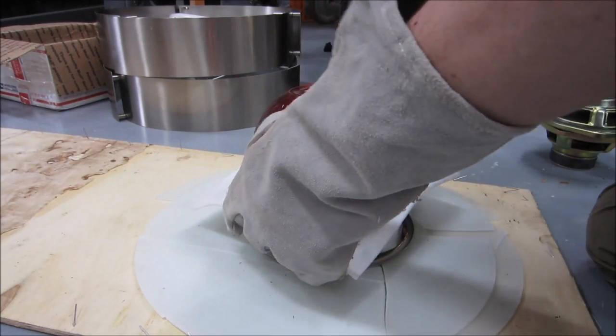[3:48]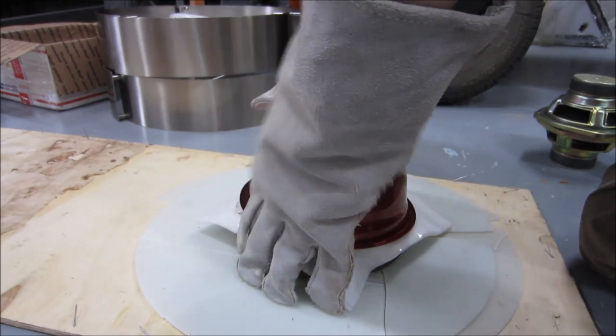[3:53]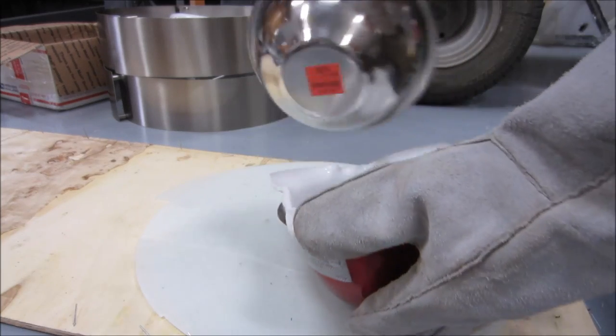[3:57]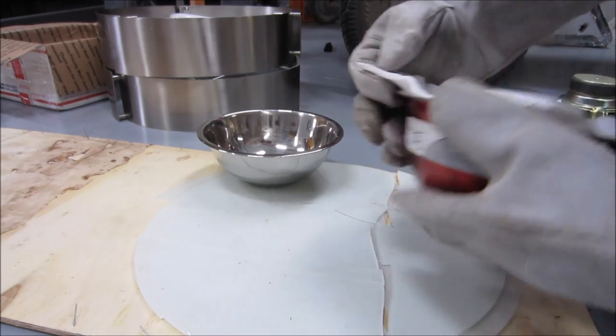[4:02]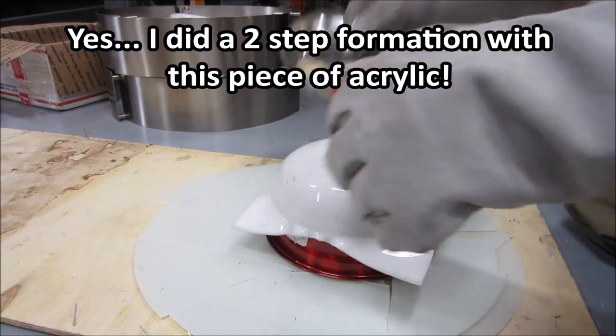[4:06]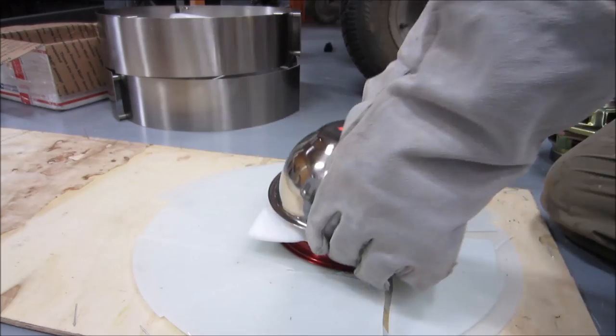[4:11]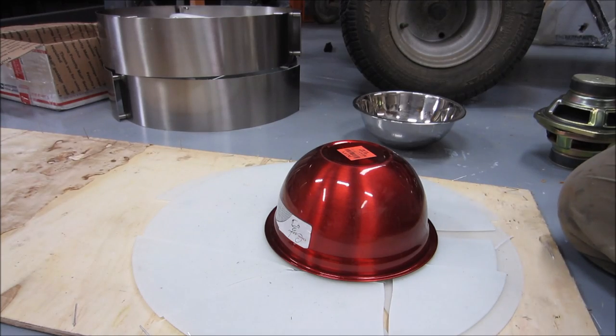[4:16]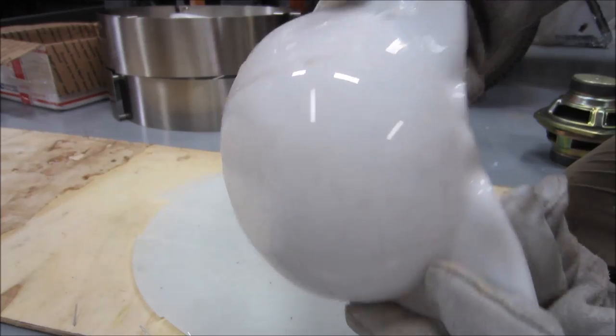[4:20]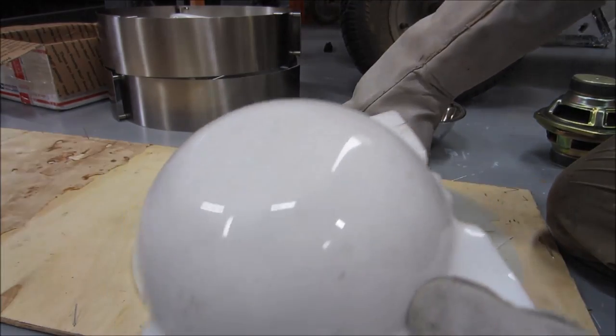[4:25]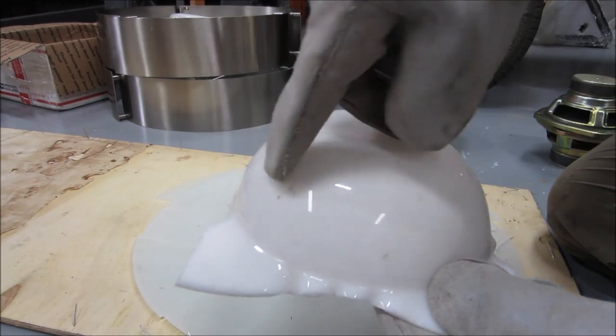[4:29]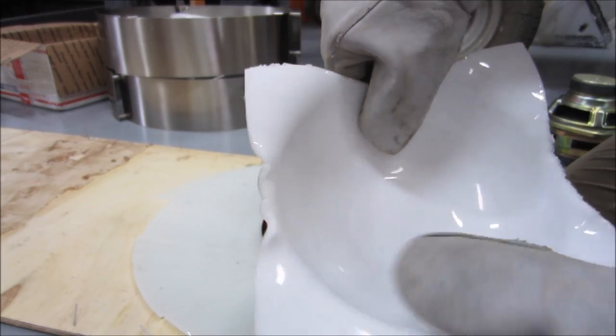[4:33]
Well, offhand, this looks like my best result by going between these two. I decided to flip it around because the other one wasn't hugging it tightly enough, and I thought I might be able to fix the shape while it was still warm, and I think that worked okay.
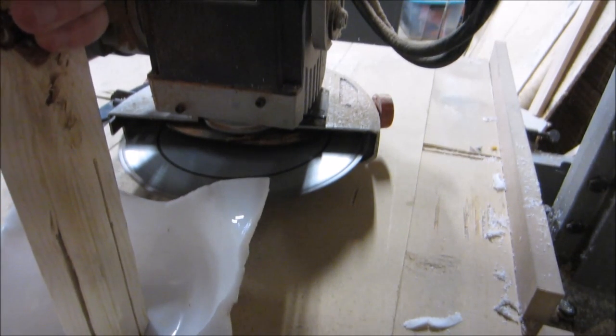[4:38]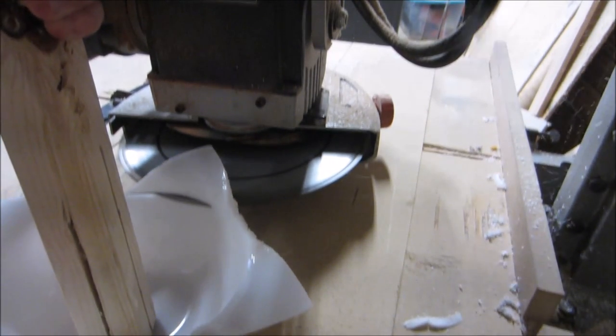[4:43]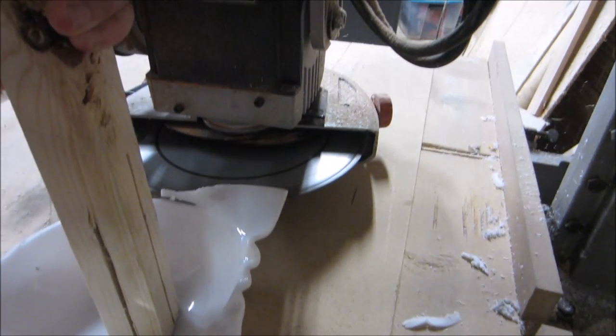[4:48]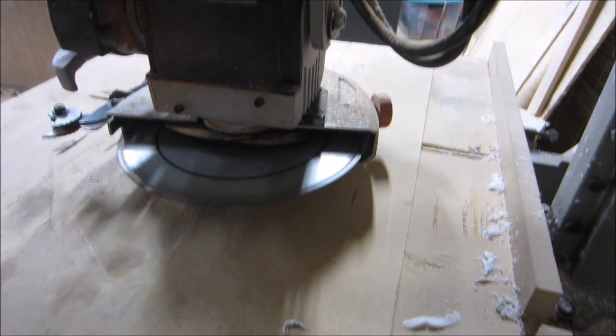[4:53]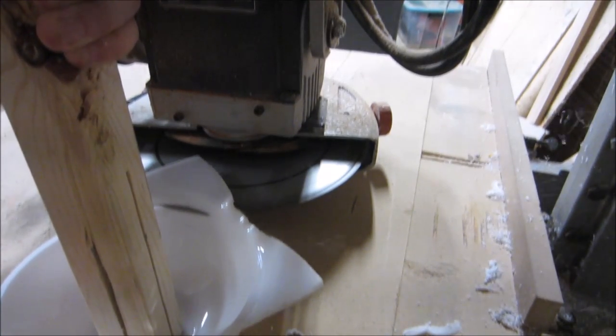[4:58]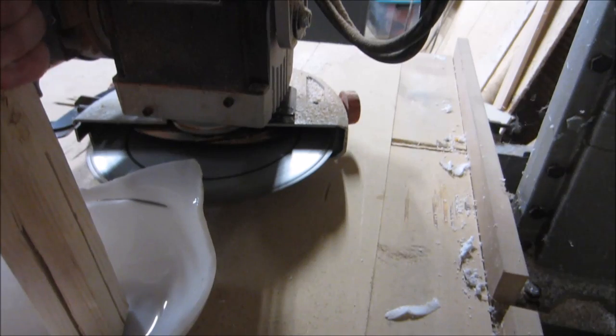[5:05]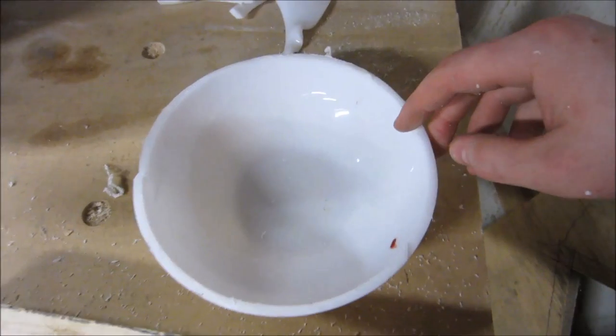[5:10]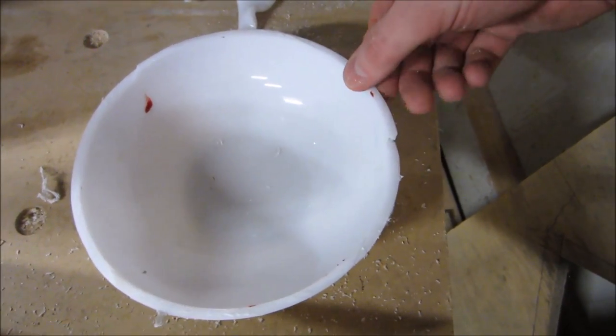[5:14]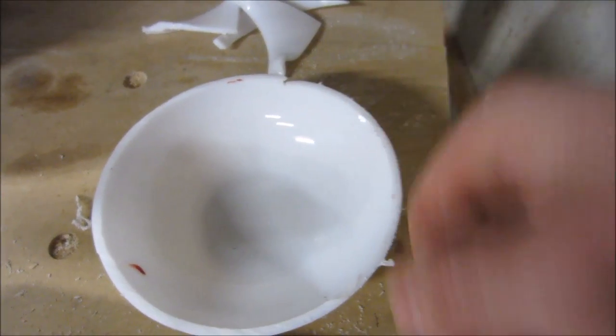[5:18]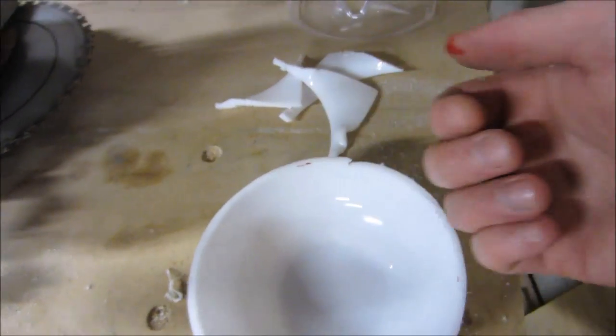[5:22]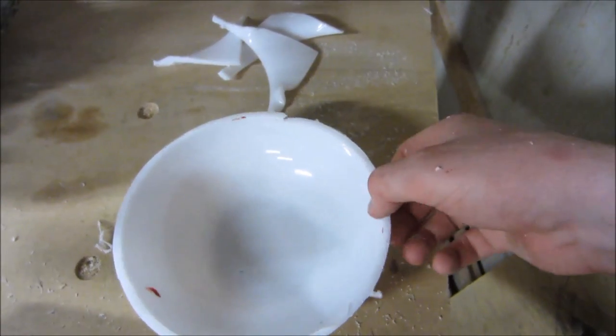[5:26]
Well, I remember that disclaimer video on my channel. There's a good reason for it. Yeah, I suspected that might happen, which is why I was using this instead of my hands, but I was still holding it with one hand, and that still flew off with quite a lot of speed.
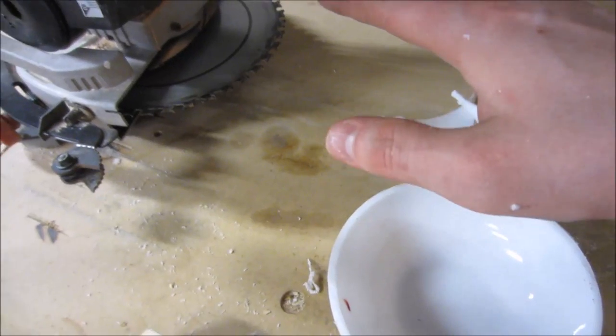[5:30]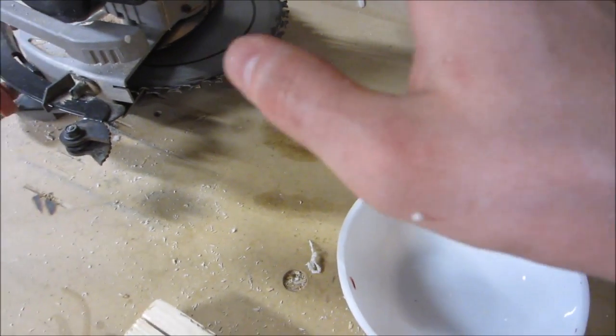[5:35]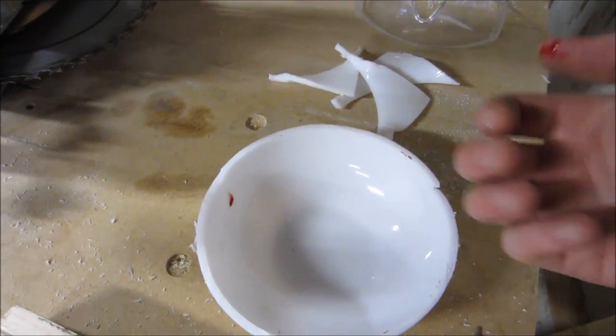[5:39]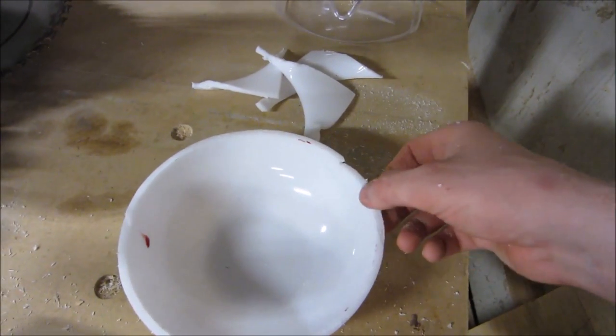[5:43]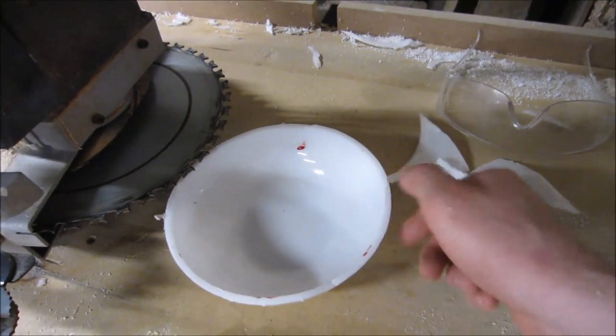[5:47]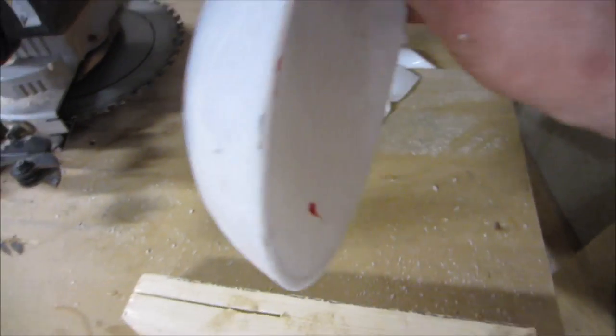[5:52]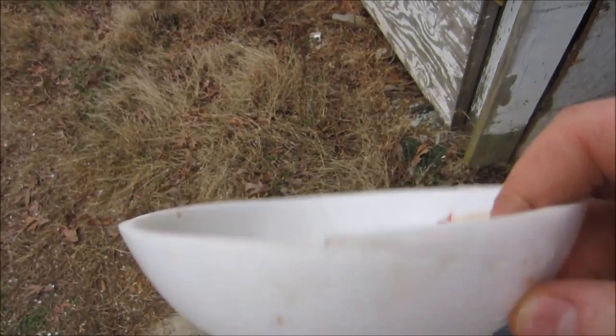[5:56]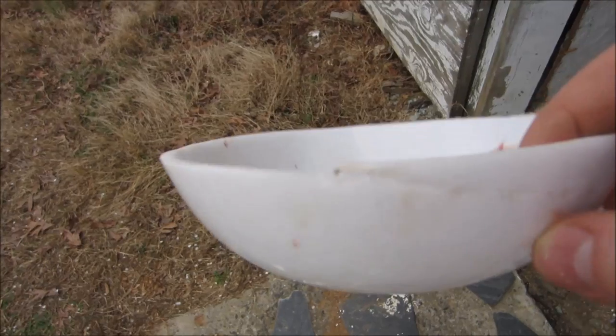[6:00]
I think the solution to this is probably speed control, and I do actually have a speed controller somewhere, so I'm going to try to get that in place next time, and maybe not even use my hand, or maybe put on a heavy glove when I'm holding it, because I'm holding it from the opposite edge as I'm doing that. But yeah, it's a really good way to do something dangerous. Hopefully I didn't ruin my result too much. It really is a shame because it's pretty perfect besides that little gouge from when it caught the blade funny.
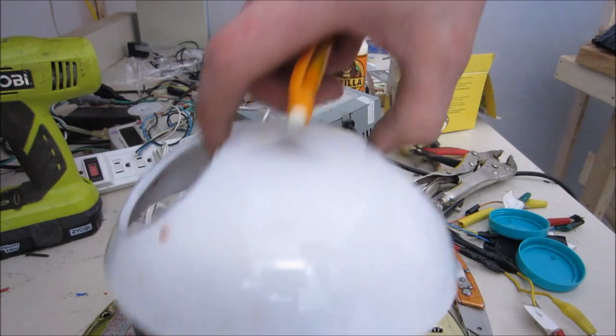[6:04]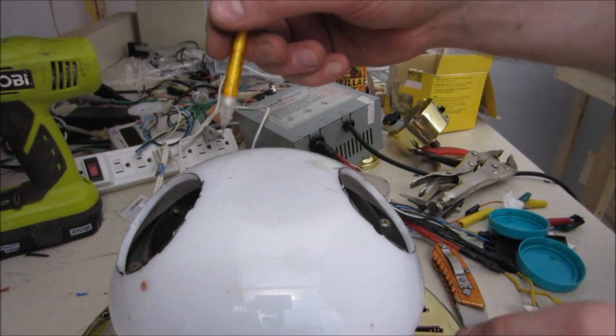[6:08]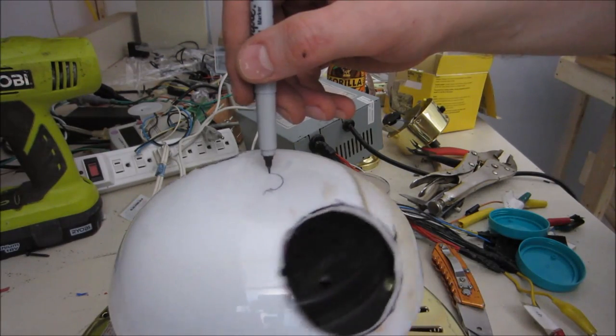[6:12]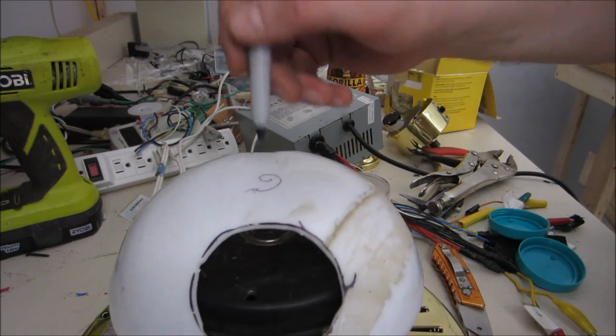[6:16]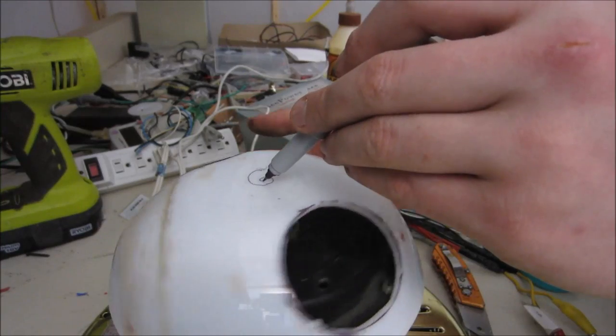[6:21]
I sacrificed this ceiling fan to the gods of center finding. And I'm hoping to basically be able to spin this and be able to find the center. The point of the least movement will be the center. Theory may be a little flawed, we'll see.
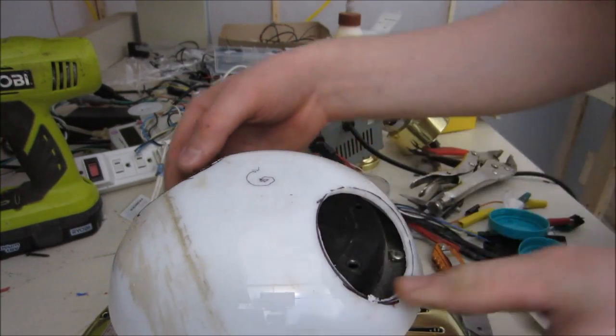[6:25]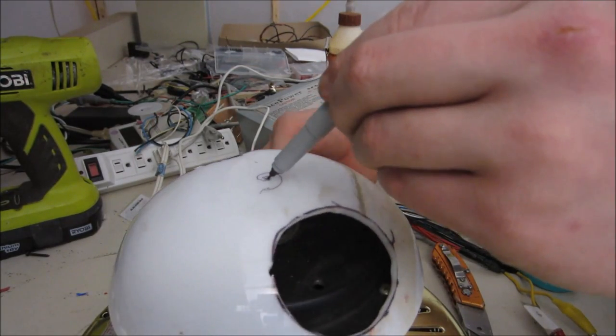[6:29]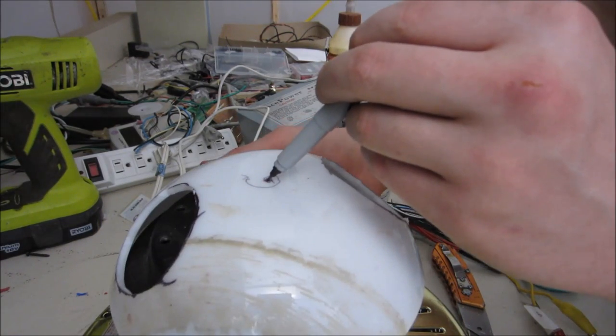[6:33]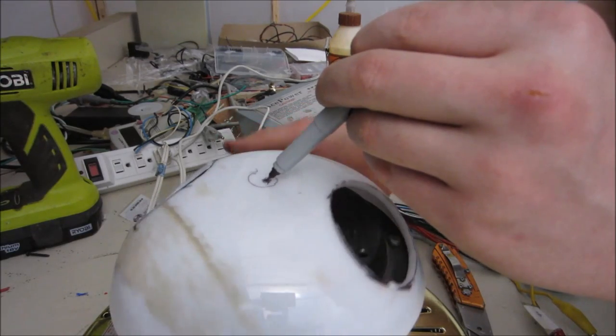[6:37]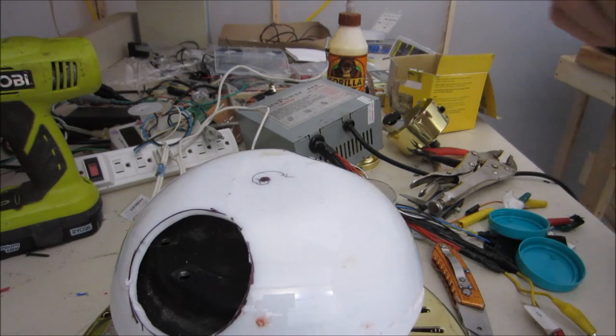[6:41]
Make sure this is exactly aligned, right? I think having some kind of jig for holding this would probably be the best, but I'm too lazy right now, so I'll just use my hand. Yep, I think that'll work. So I believe that blob there is roughly the center.
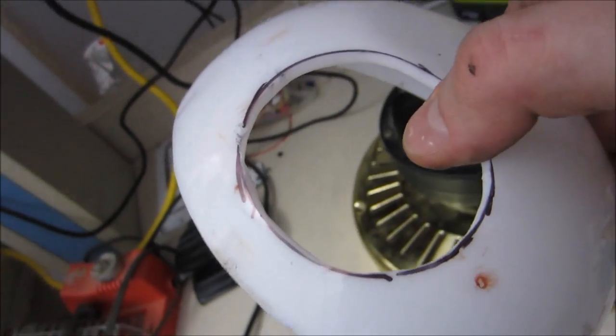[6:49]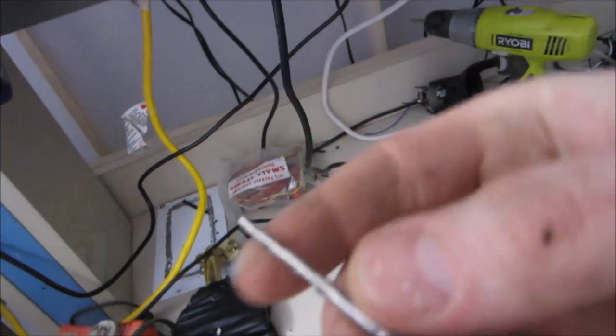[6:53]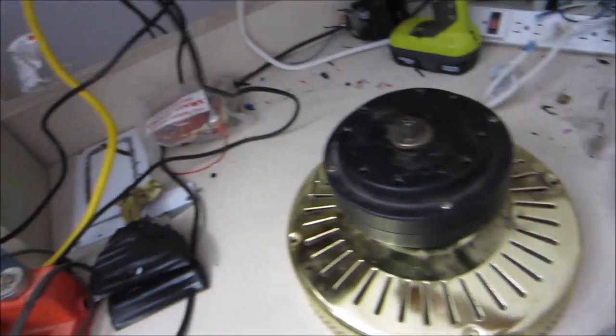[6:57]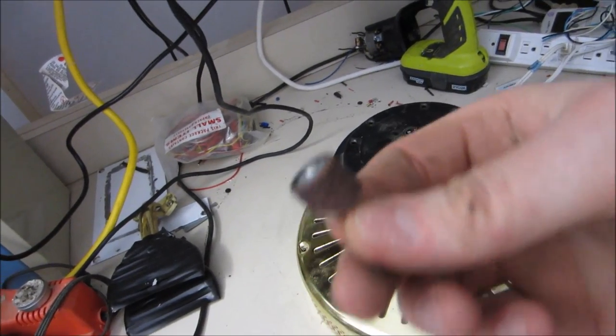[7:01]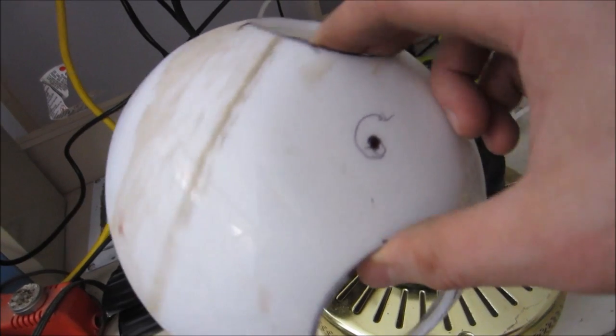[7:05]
Wanted to mention, the way I made these holes, I used a plunging omnidirectional speed bit to rough it out. Then I used a sanding bit to smooth out the edges. And these holes are not anywhere near perfect, but I think it'll work.
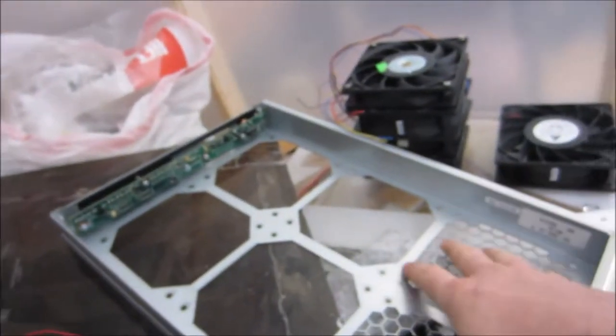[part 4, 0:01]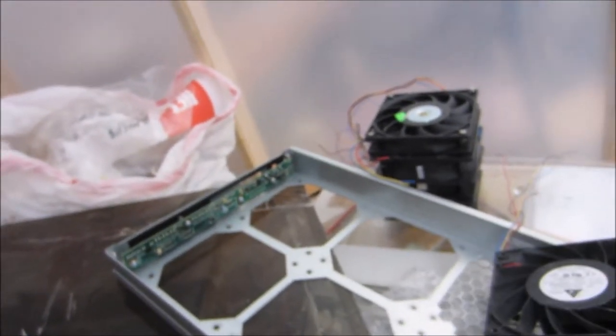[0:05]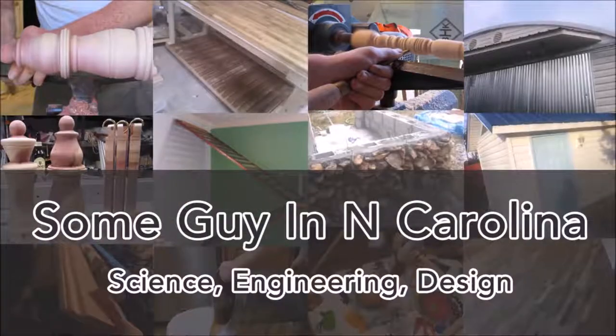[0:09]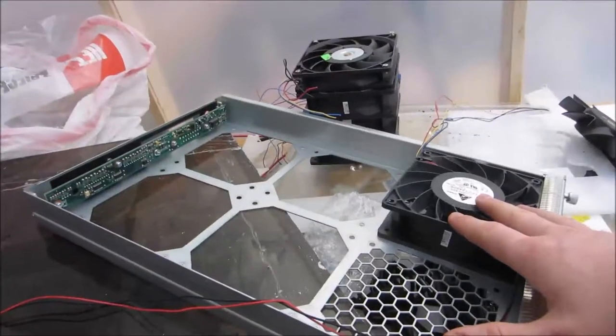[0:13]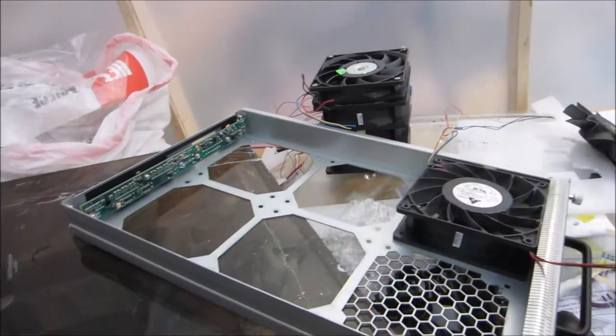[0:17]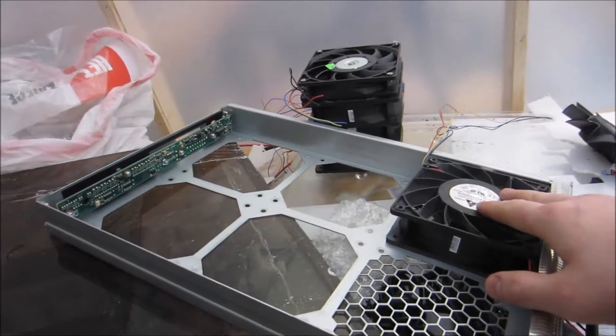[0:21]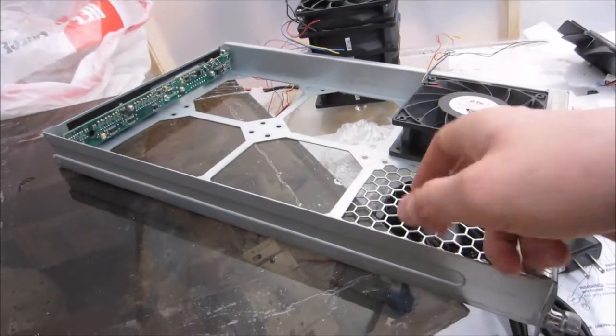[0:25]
I ended up ordering more fans because I had destroyed the two that I was using initially. I ordered this tray of six fans. I didn't exactly want to, but I knew that it would save me so much time rather than redesigning the mechanical aspects of it.
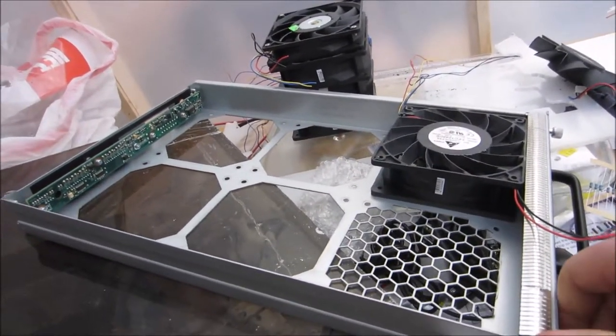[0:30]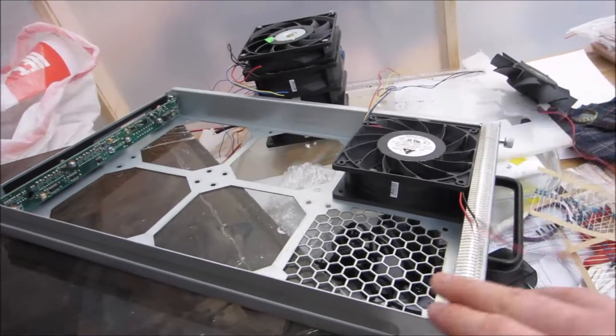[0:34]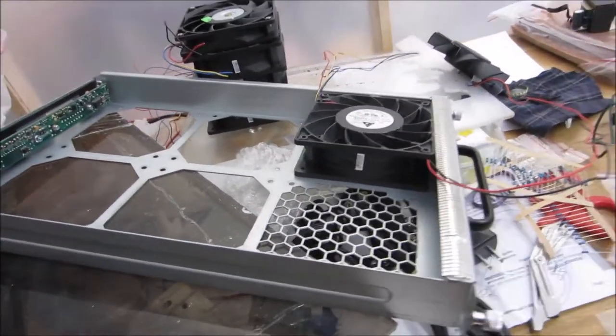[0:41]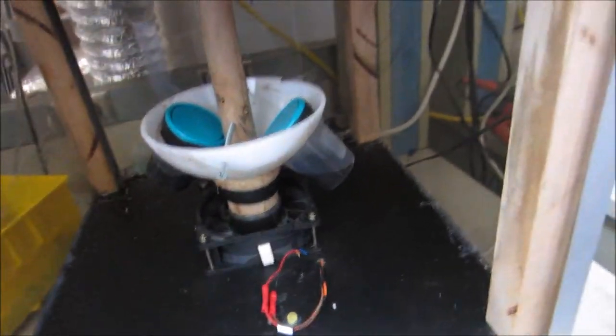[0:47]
And I got this, including shipping, six fans and this fancy manifold that holds them for a data center, for $15, which, you know, call it, heck, it was probably more than $5 for shipping, call it like $8 in shipping. I mean, I got six fans basically for $1 or $2 a piece. They're obviously old, they're dusty, but my centrifuge application is obviously destroying them.
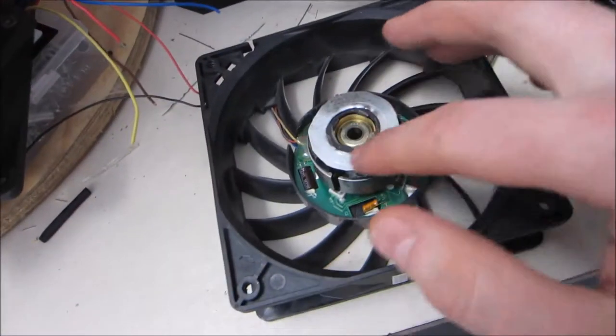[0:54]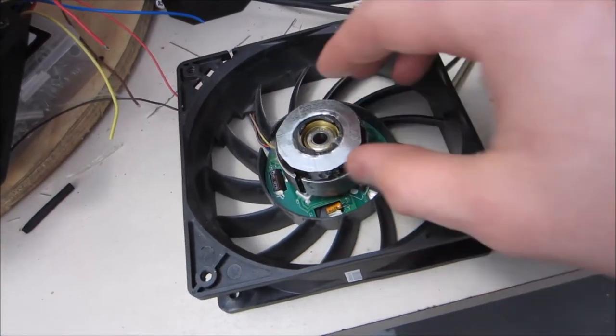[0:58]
So I also tried some experiments. I wanted to protect the coil, so I added some sheet metal around it, but I think it must be using a Hall effect sensor or something like that to regulate speed. So this was screwing it up and it didn't want to work after that.
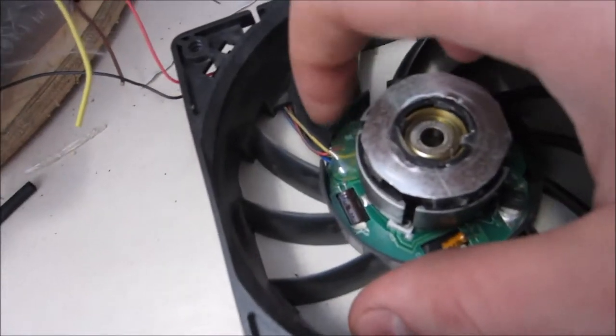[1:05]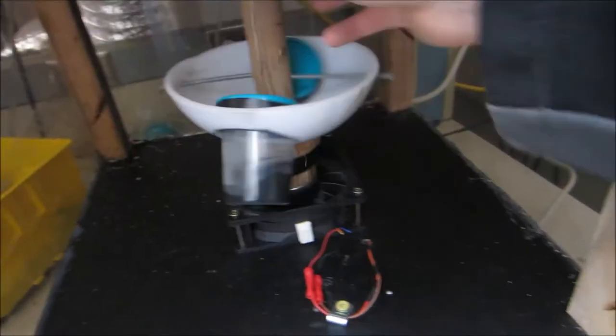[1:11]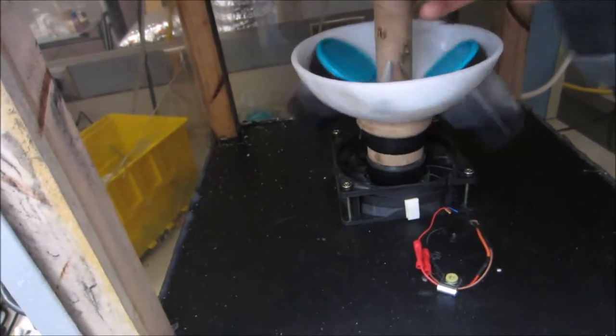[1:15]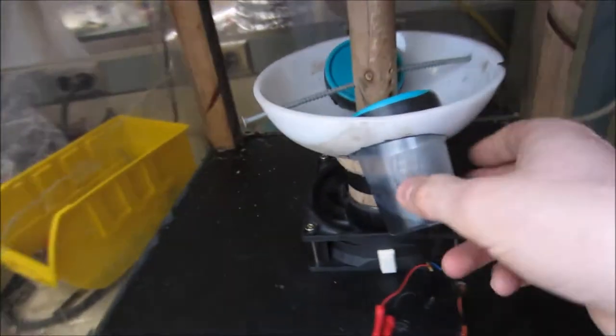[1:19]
So the only change I really did was I hot glued the contacts for the wires, because that was the weakest point last time. I think I'm ready to run it again at top speed and see how it goes with only 2 ounces of fluid, which is probably still actually quite a bit to be running in this.
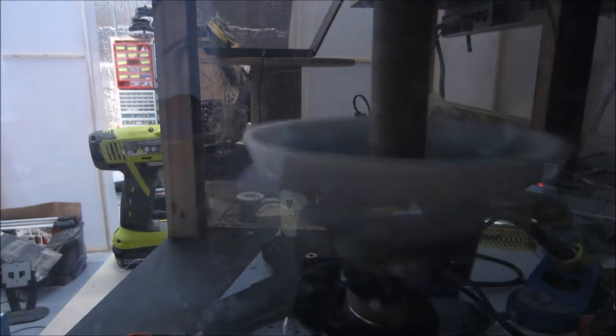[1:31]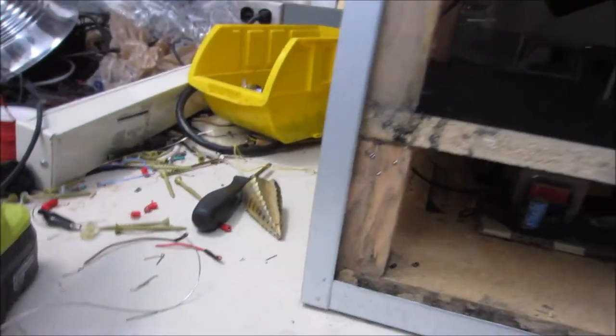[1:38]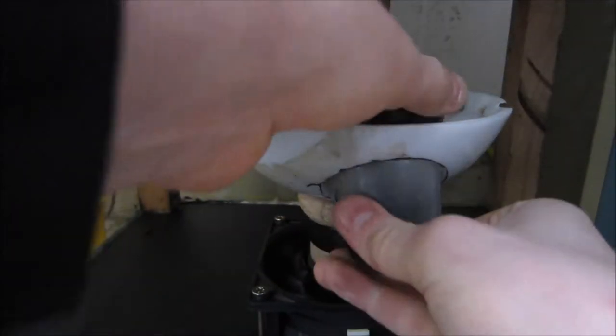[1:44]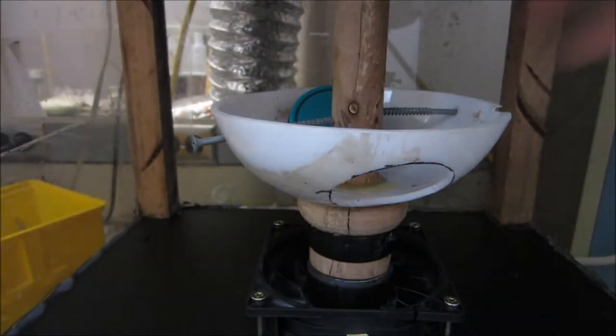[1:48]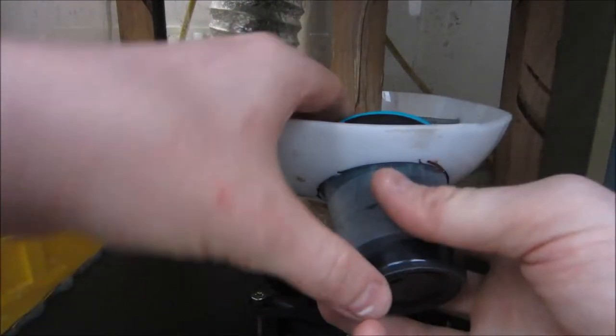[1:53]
And I don't know exactly what went wrong, but something is sad. It pretty much just stopped working. On the bright side, there was no failure, though I can see that these cups were really, really strained.
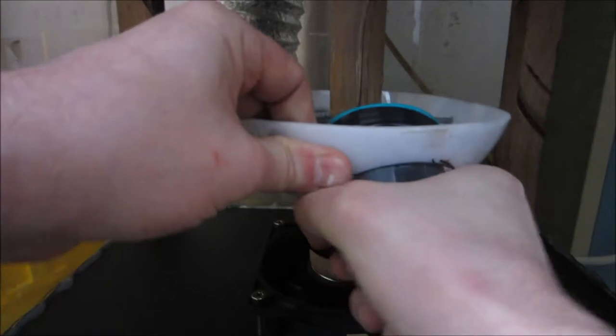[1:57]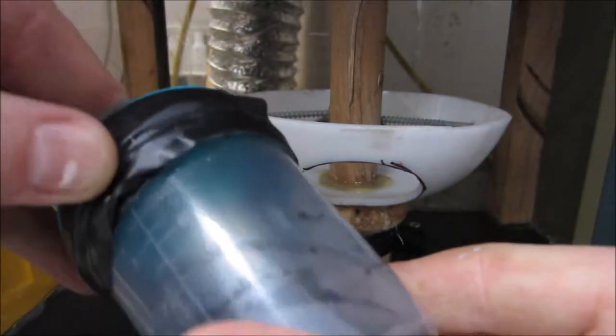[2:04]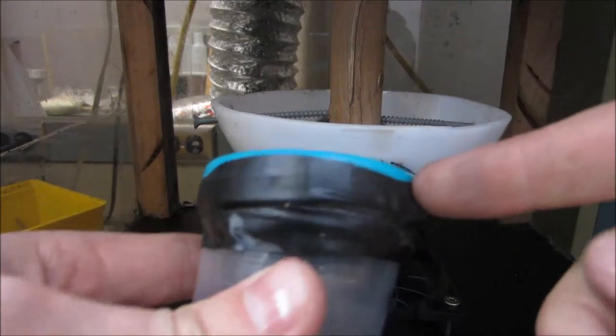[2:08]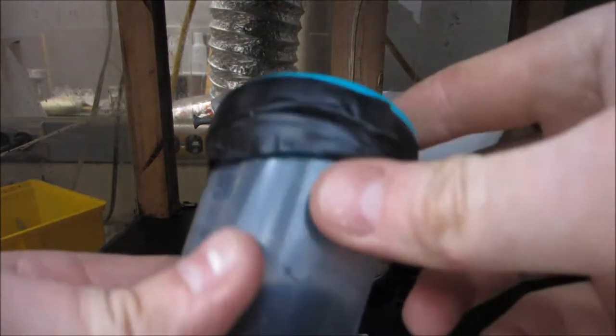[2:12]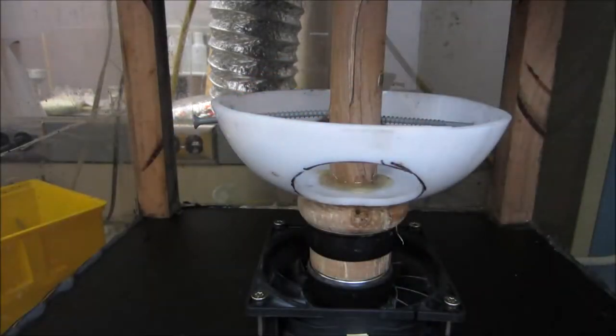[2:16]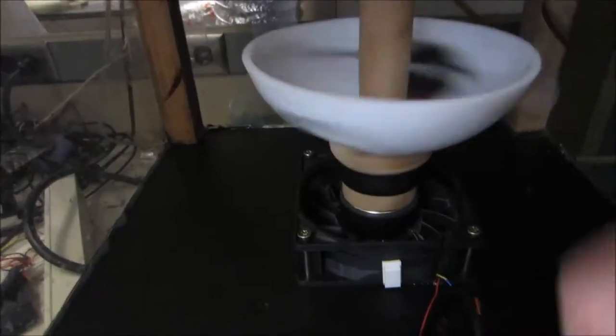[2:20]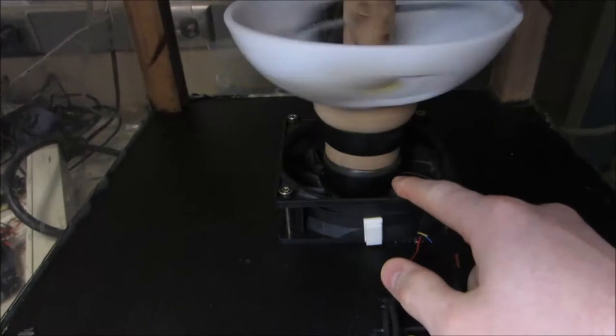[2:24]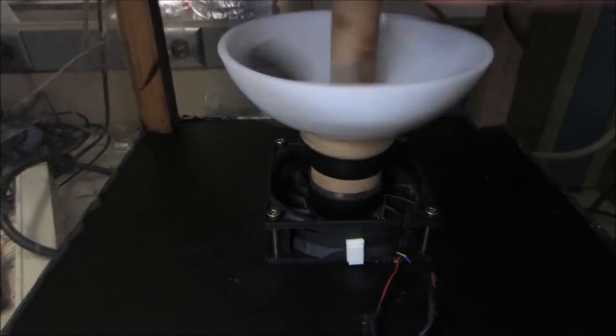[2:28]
This actually almost flew off. I can see that it was held on by the tape. So maybe the previous failure was, in fact, just from the cap flying off and then the unbalance and whacking into it as it went. There was enough vibration that it actually destroyed yet another motor. I suspect the electronics vibrated apart or something along those lines.
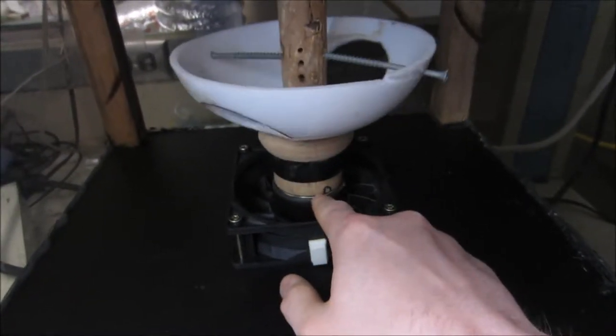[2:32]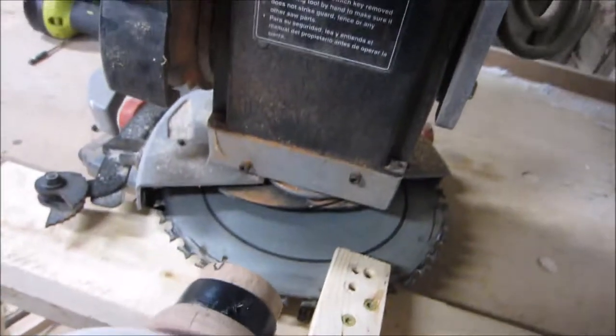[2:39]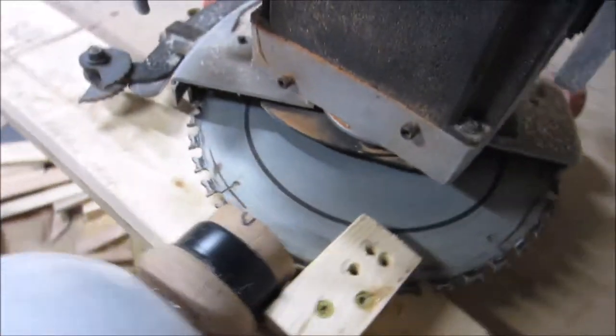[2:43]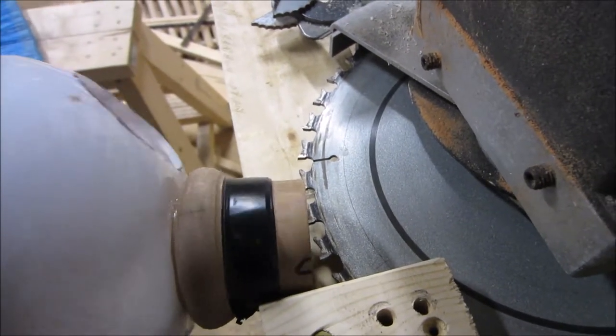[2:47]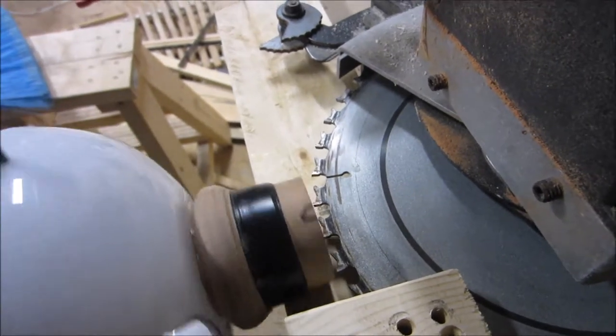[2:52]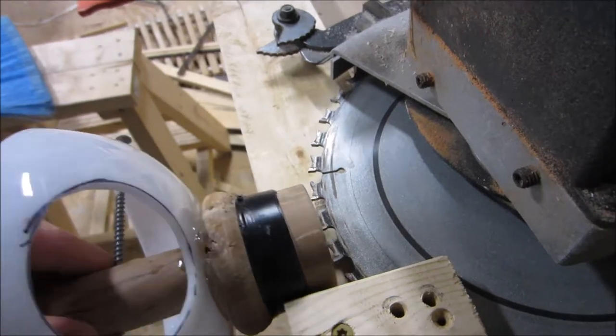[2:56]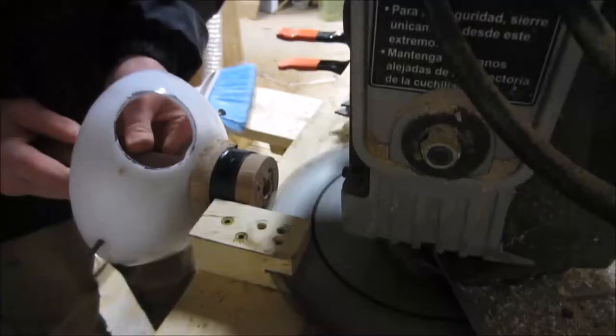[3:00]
I think part of the crux of the problem is, again, that these aren't flat. And I think that's causing some kind of effect like this. I know this is kind of silly, but it's one of the few simple ways I can think of to hopefully create a perpendicular solution to flattening this out entirely. So I'm hoping to rotate this by hand as evenly as I can and just skim the bottom until it's completely flat. It may not work at all, we'll find out.
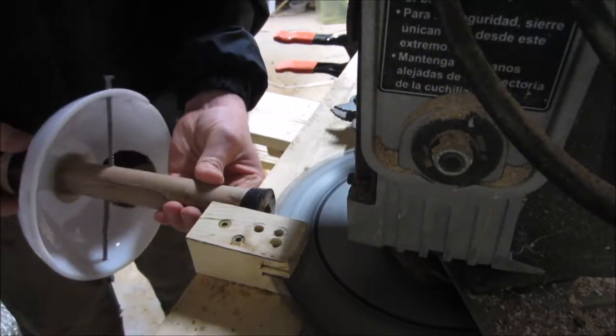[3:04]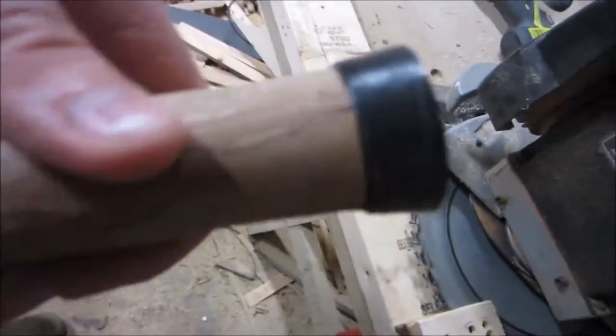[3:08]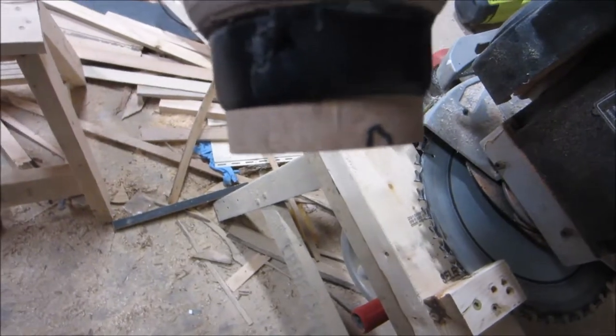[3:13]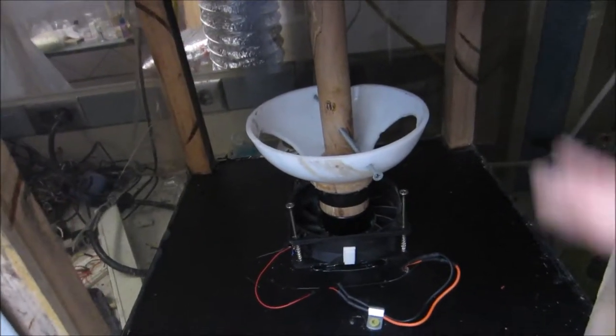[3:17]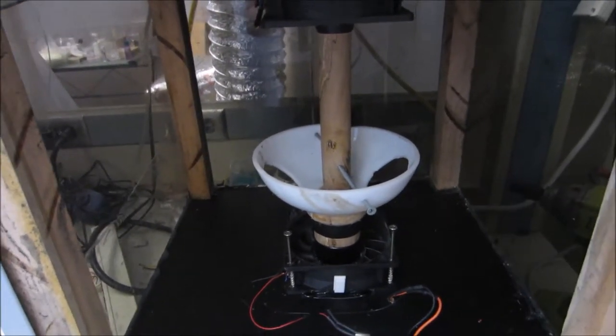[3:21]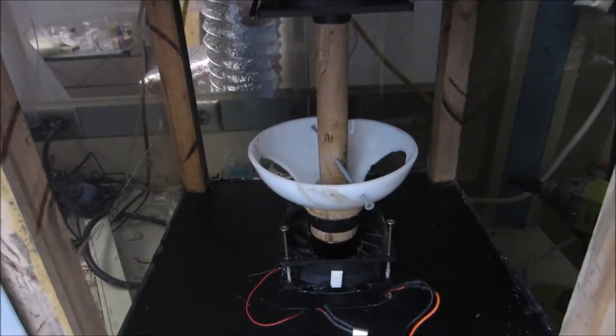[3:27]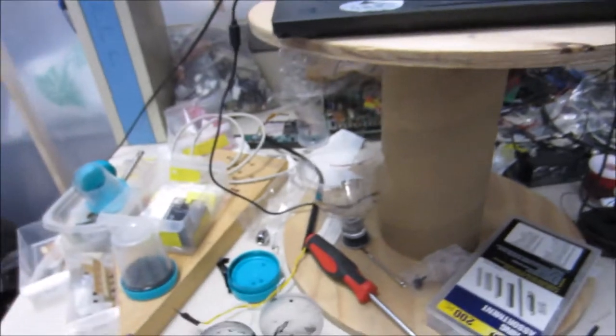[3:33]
Well, a little bit silly, but I think it got me much closer, especially on this side, which was much worse. So I very concretely come to the conclusion that I don't have the machines to actually make a good centrifuge. I just don't. I would have to have like a CNC lathe or at least a metal lathe or something to get enough precision out of the right types of materials. That was a little disheartening to realize, but then I saw this,
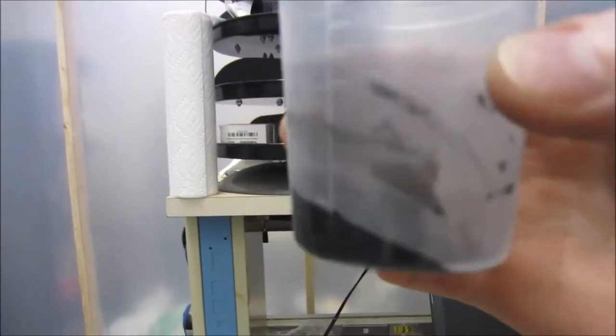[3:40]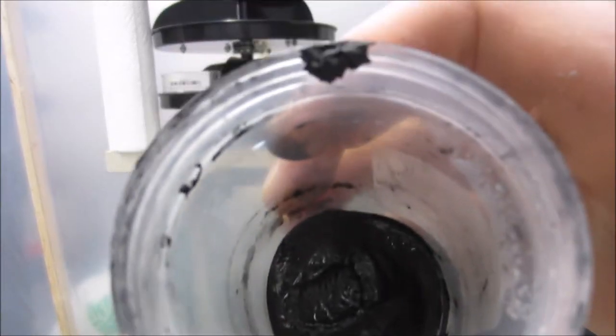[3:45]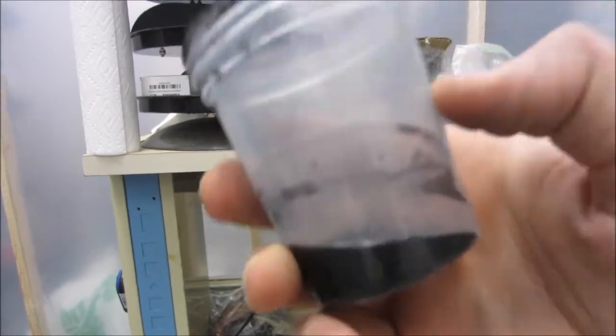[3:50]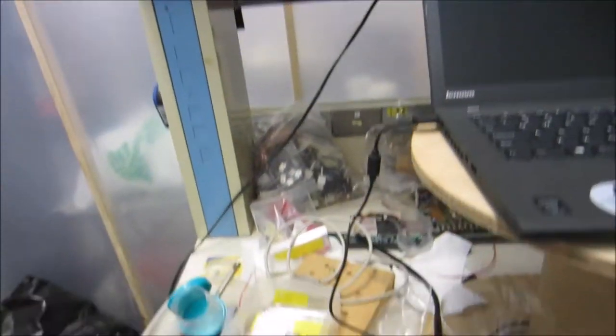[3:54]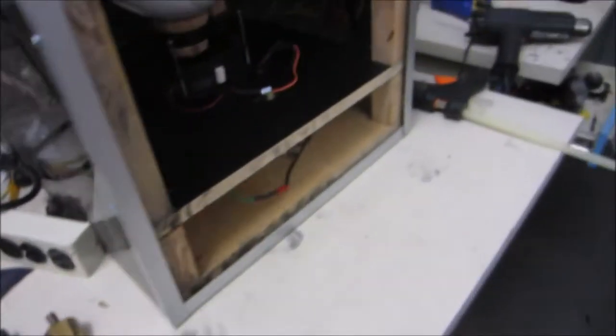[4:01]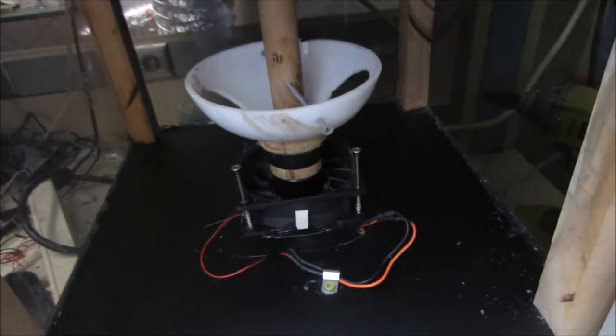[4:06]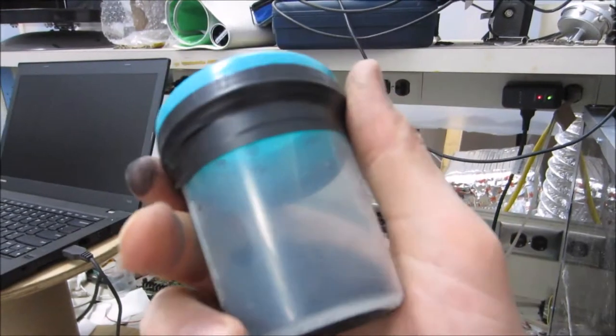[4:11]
which doesn't look like anything important offhand, but this is all solid sediment. So in my last run, and I can tell it's from the centrifuge because of the angle, it actually did separate out most of the solids. And that was at a fairly low RPM. So I think actually all I really need to do is get this working good enough and keep it at a lower speed with a lower volume of liquid to keep the weight down.
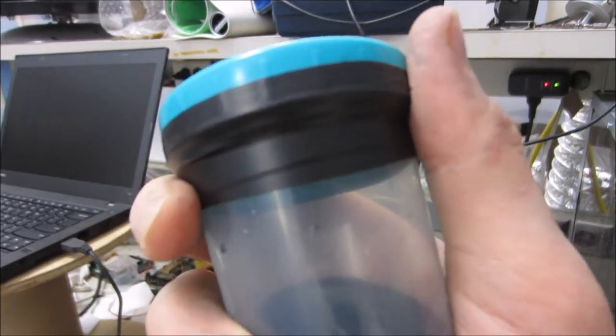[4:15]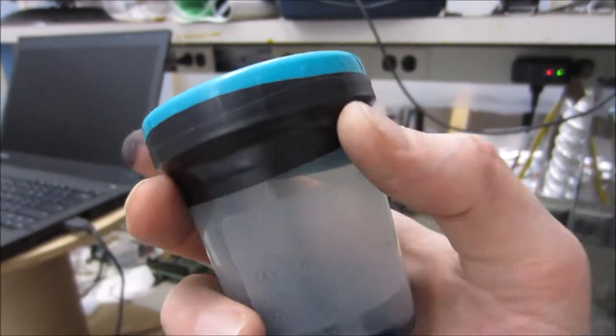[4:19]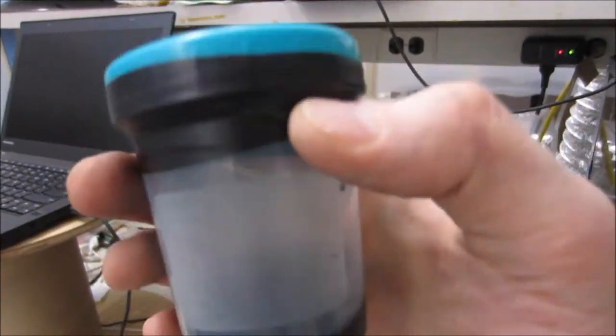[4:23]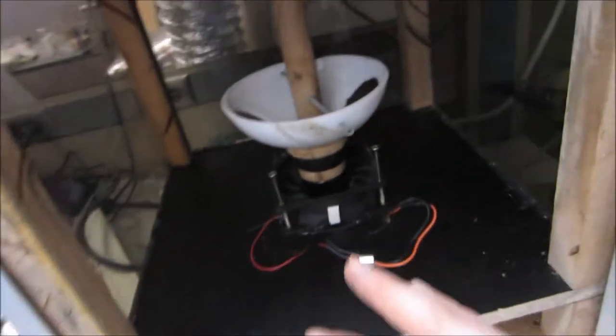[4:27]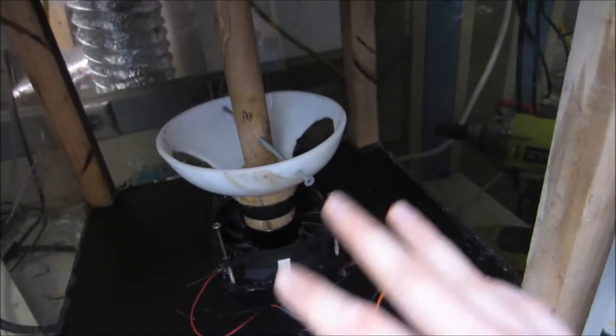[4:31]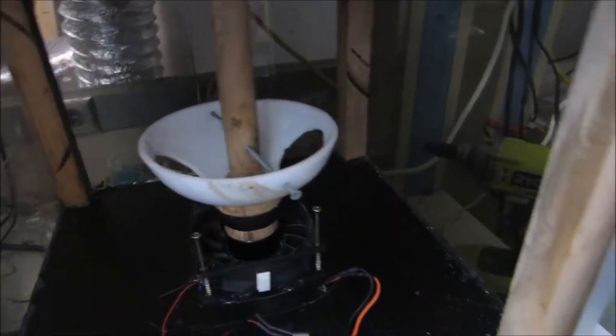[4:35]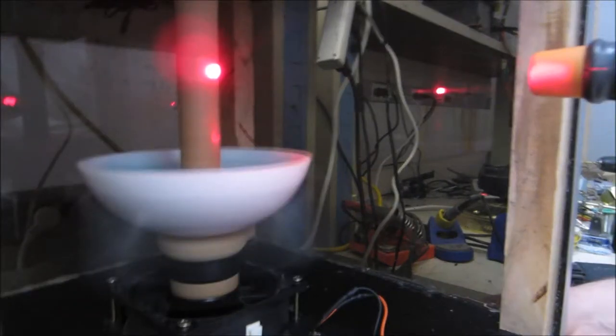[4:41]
And the other thing is these containers can't stand the centripetal force that is applied when it spins at high RPM anyway. So basically the container can't withstand it, the liquid doesn't need it for separating out the solids, and more importantly, this can't really withstand it either. So I'm going to see about maybe running this closer to 1000 RPM for a longer period of time. I'm going to do a quick RPM test and just get a feel for the speed.
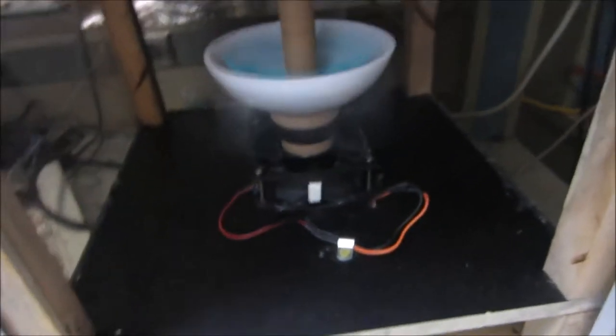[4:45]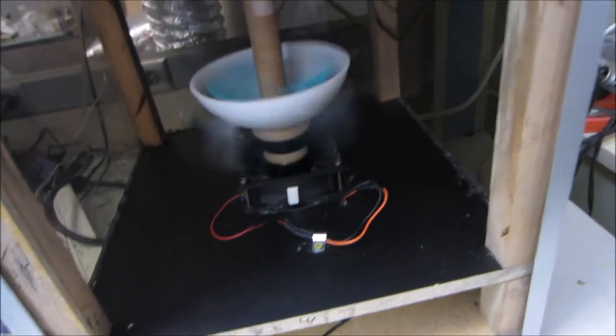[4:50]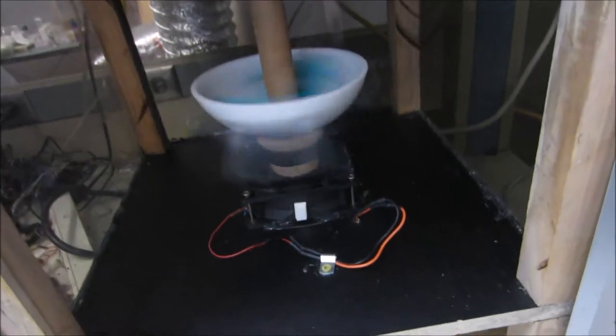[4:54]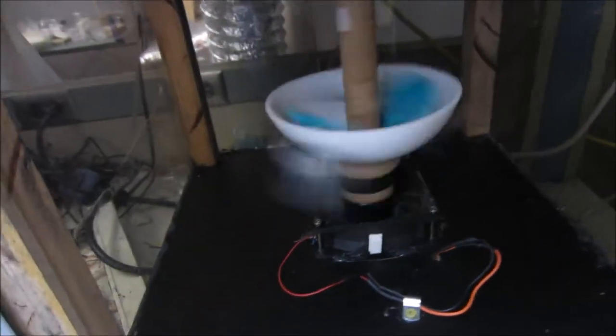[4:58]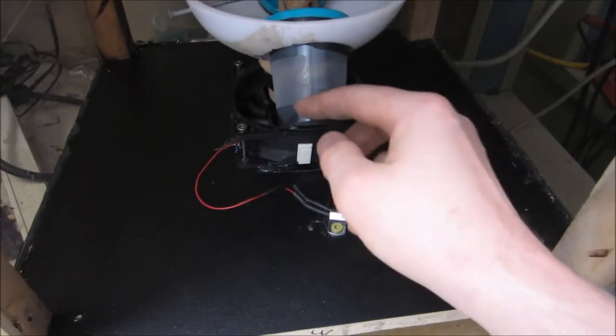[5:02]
Well, it's making me really nervous, but about the lowest this will run at before just disengaging the circuit is roughly 1700 RPM. So, really can't even go down to 1000. This stuff was already in suspension for a long, long time, and it just is separating out really quickly, much more quickly than I expected.
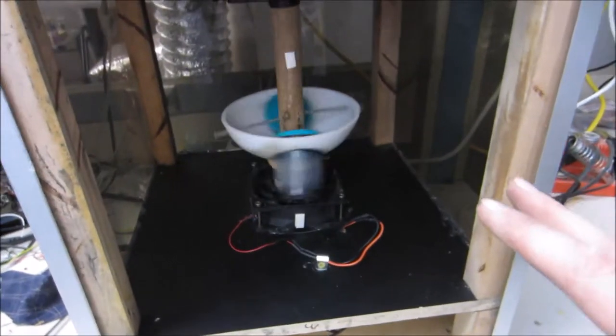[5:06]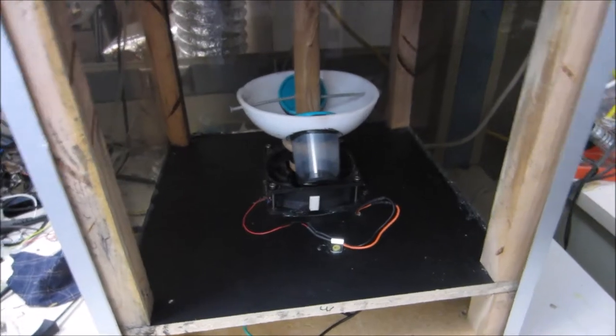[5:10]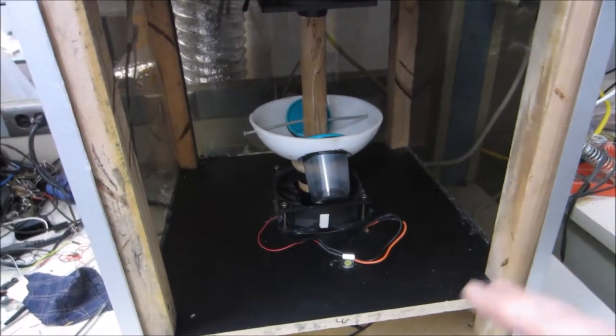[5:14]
Rather than pushing my luck, I'm just going to keep this setup the way it is and try using it as a tool for a while rather than maxing it out and causing it to stop working over and over, which is pretty much what I've been doing.
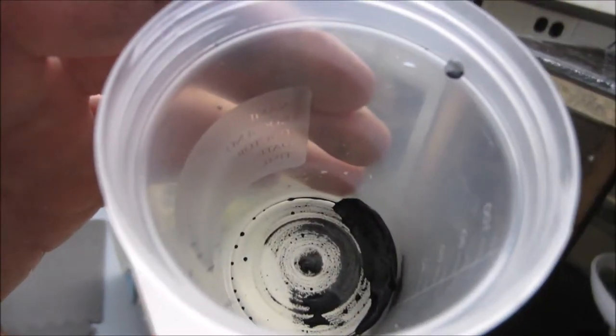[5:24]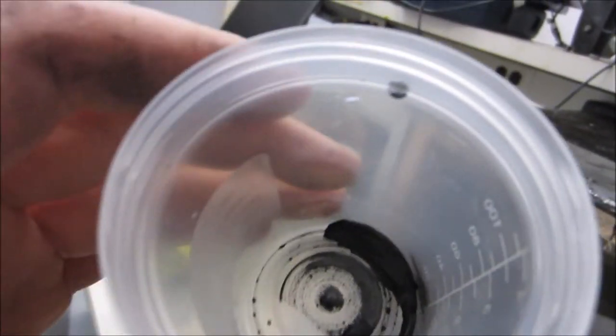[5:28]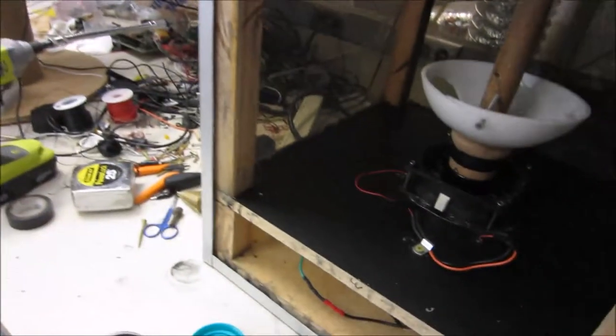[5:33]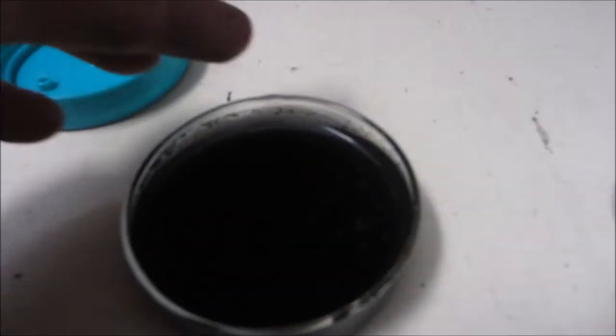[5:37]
So I ran that for a minute, and I should clarify, this has already been run through once before. And as you can see, quite neatly, it has gone to a corner. And that was starting from 20 milliliters, because that was what was left after the previous extraction. So I'm going to call this project good enough.
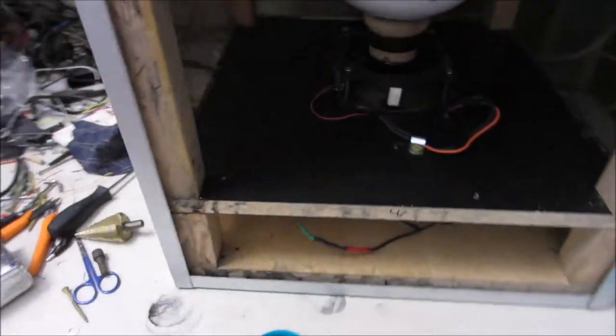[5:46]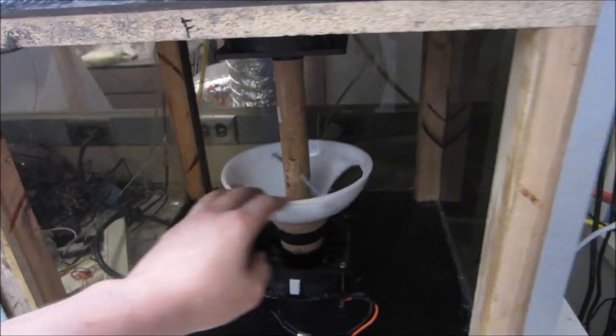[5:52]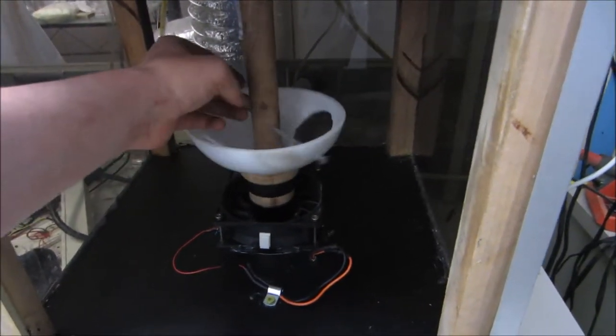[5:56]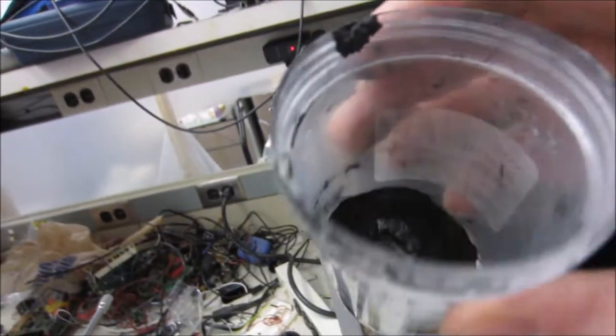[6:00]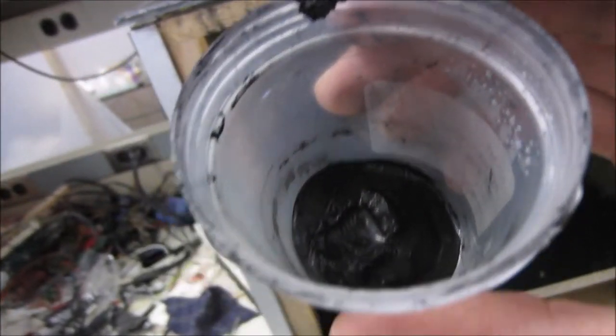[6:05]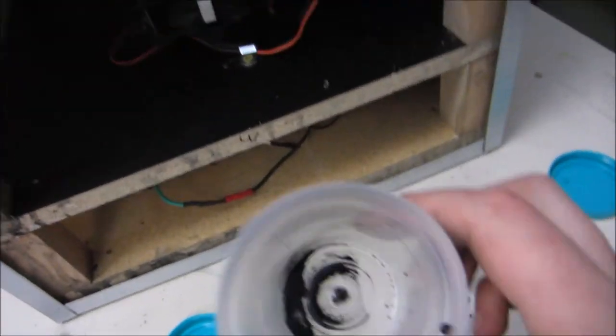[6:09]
I think if I ever wanted to make a really decent scientific centrifuge of some kind, not necessarily analytical, but just one that could reach speeds over 10,000 RPM with a fairly large volume of material. Still, this extraction is insane. It managed to get all of that out of a liquid suspension within probably about a minute, same as this, or these suspensions.
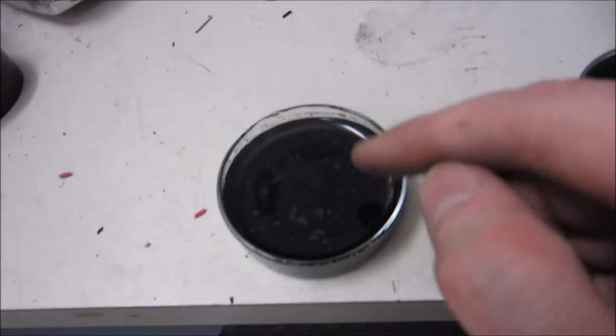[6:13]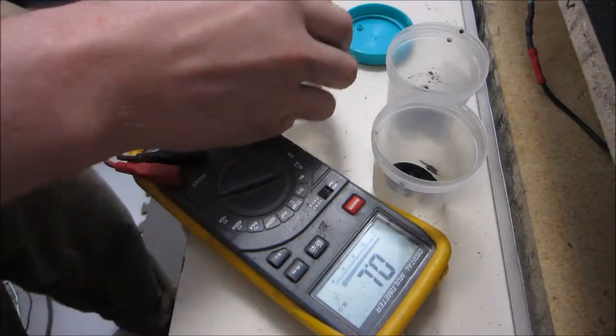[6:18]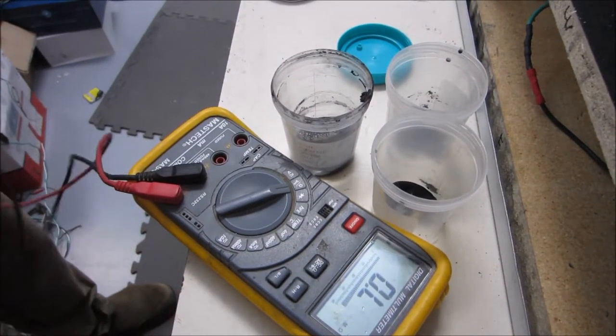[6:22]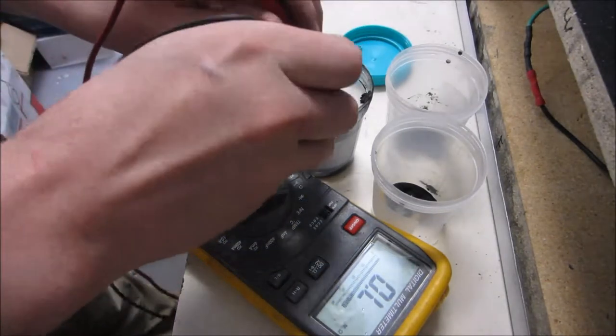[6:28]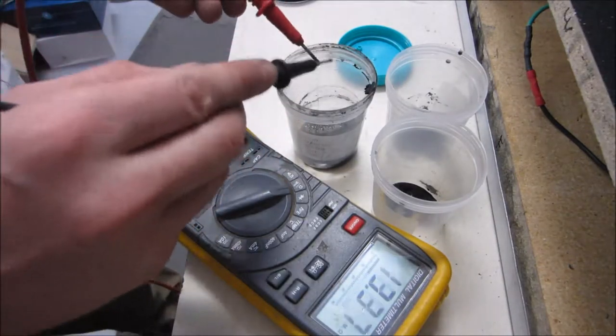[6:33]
And as you can see, there's still quite a bit that is suspended. So the main thing I had wanted to test was conductivity of these particles. And this is not exactly a very scientific test either, but I'm just getting a ballpark reading of the resistance. I'm surprised to see that it's actually fairly low.
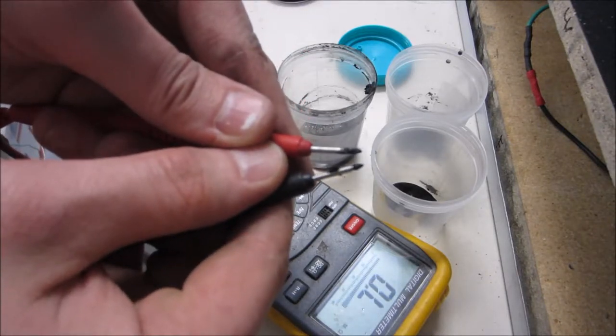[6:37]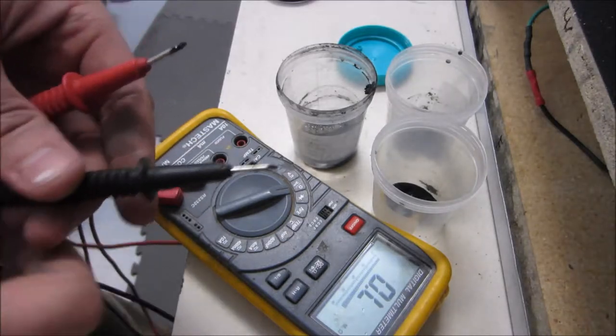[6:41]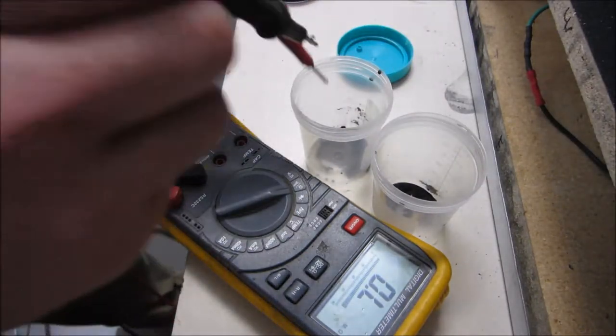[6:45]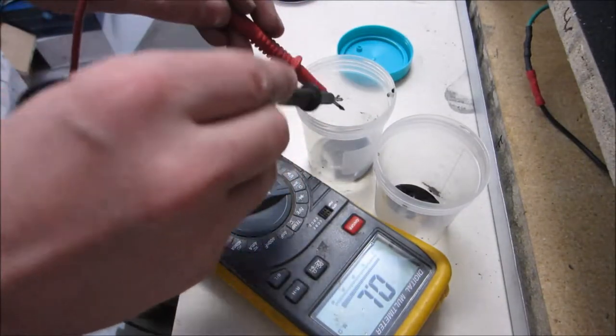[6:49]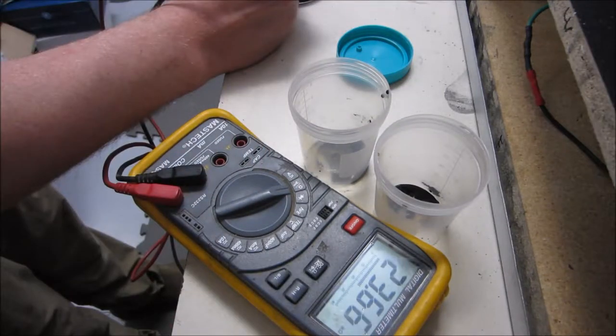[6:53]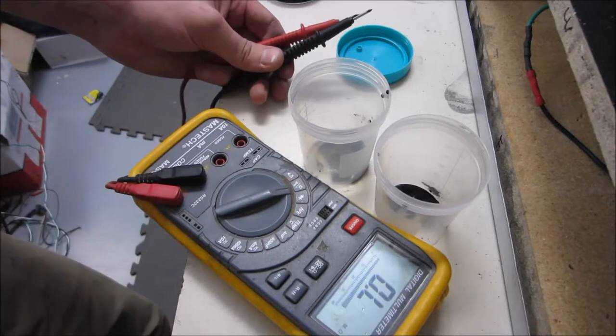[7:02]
This was probably about, yeah, maybe 5 millimeters apart, and I was getting about 2.5K, which is pretty low, really, considering it's not like it's graphene or even starting from graphite. About the same from the second extraction, most likely. Hard to tell. That's actually surprisingly low, too, about 23, 24K. So yeah, this activated charcoal is actually fairly conductive.
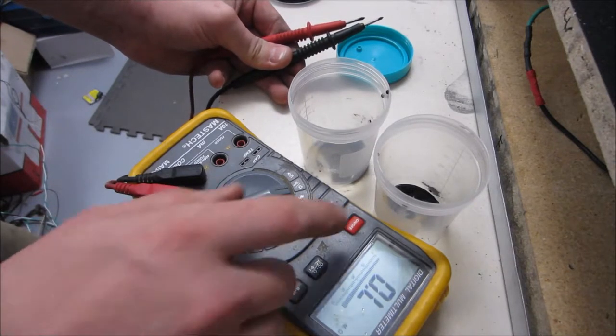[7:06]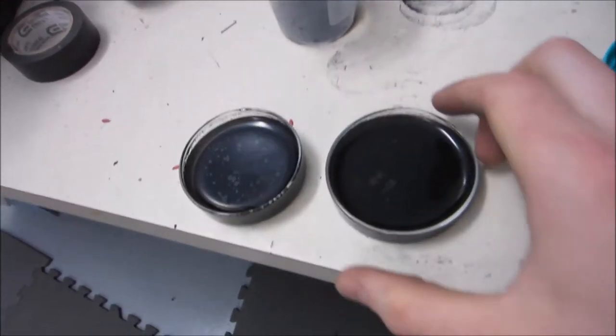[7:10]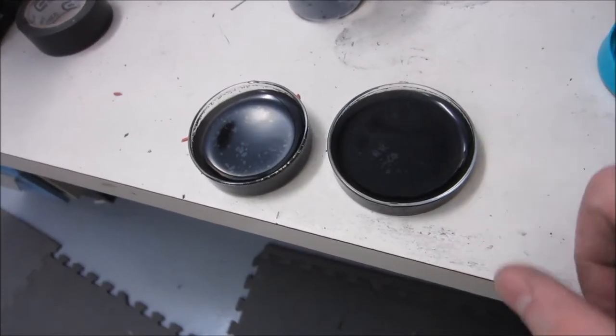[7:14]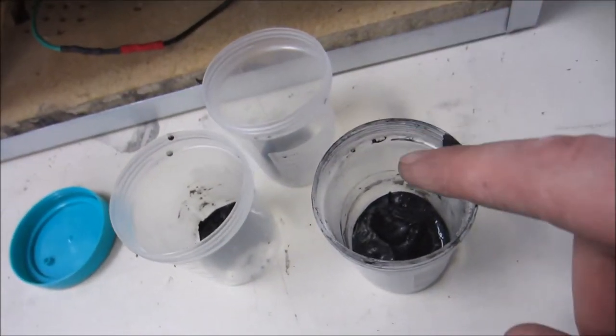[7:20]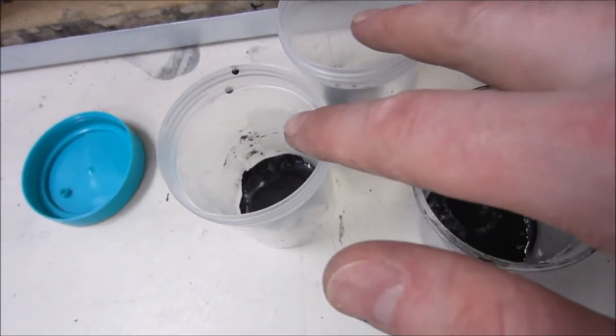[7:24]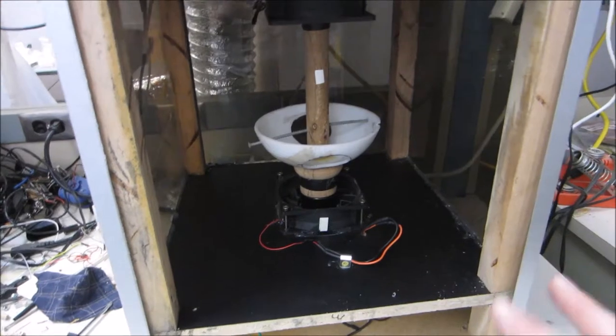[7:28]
My goal would be to make something like some supercapacitors with it. I'm kind of curious. I think I'm going to leave these out and let all of this water evaporate and then just see what I'm left with. In theory, what I have here is something like maybe rough, fine, super fine. Let these evaporate. So this project is good enough. I'm going to move on to other things and consider this done for now.
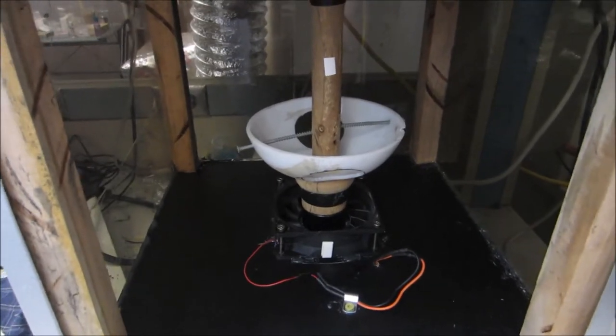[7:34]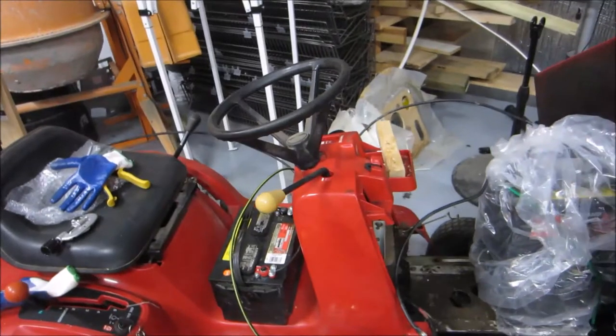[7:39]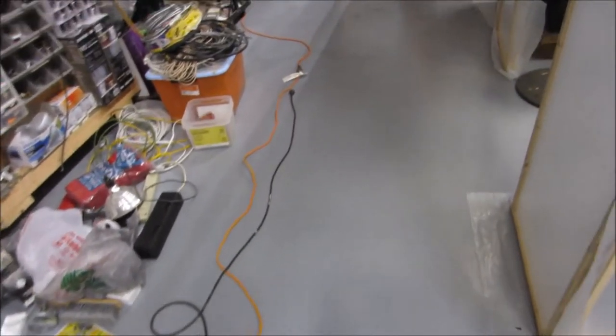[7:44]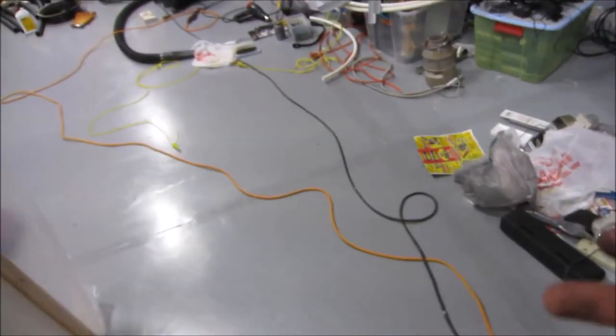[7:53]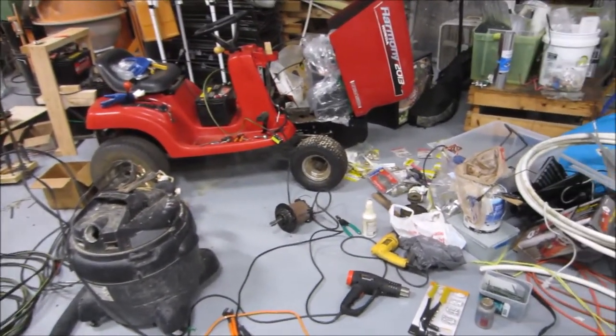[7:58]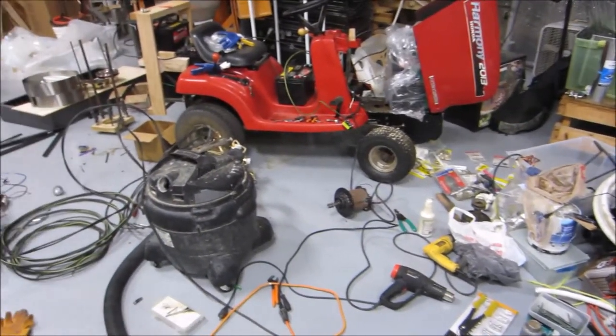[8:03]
I'll tell you guys a few things that are coming up. I've been working on converting this lawn tractor into an electric vehicle. And in other news, I finally have over 100 subscribers, so in a common YouTube tradition, I will be doing something to celebrate coming up soon. It will be destructive and somewhat pointless. I'm also planning to add some rant videos in the future, and being that it's getting warm outside again, I'm starting to do a little bit more construction and some milling on my lumber mill and cutting down some trees.
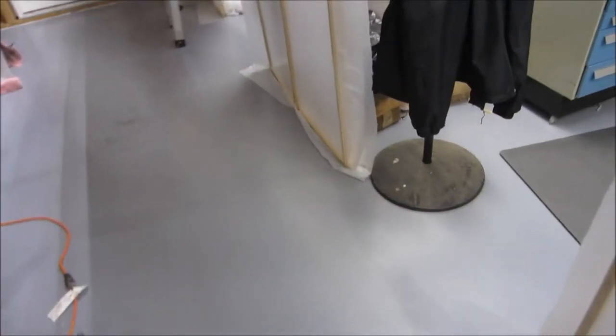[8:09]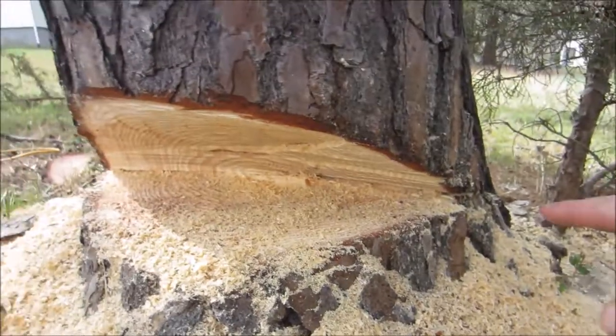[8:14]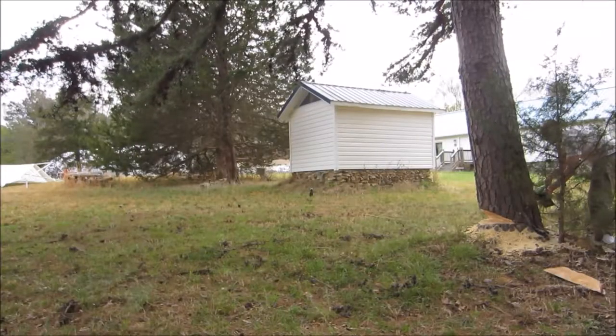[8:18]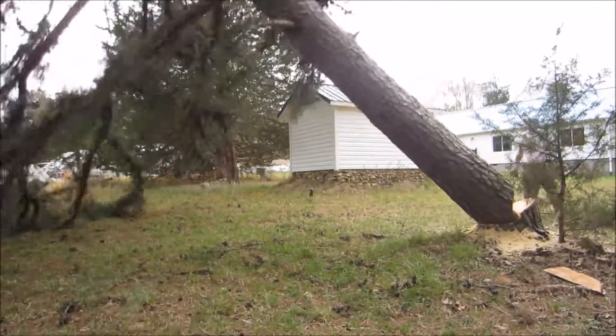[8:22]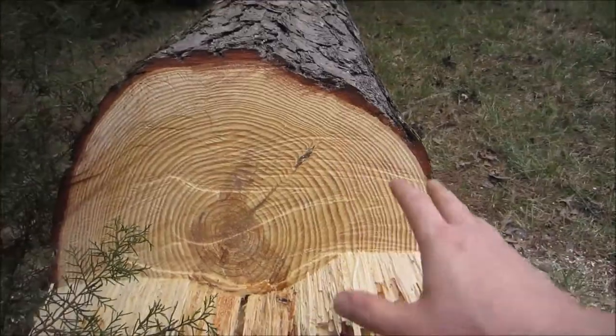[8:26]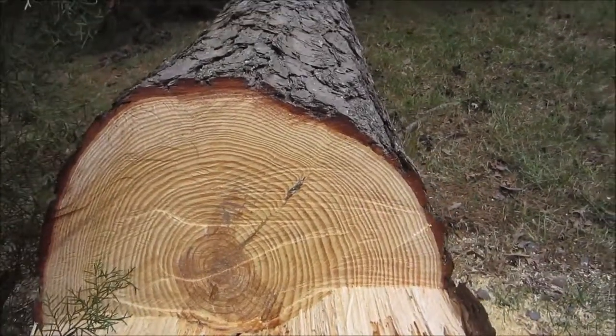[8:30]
All right, this is a pretty good size wedge right here. Counting, this tree is probably about 45 to 47 years old, something like that.